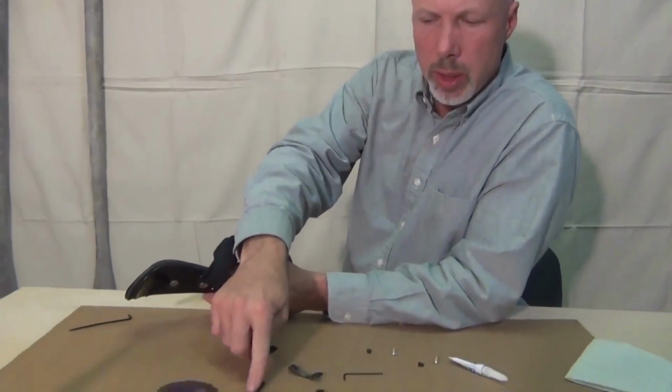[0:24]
On week 12, we talked about the calf section and how sometimes you have to make an angular adjustment. In that week, we talked about the reasons for the need to make that adjustment, but we really didn't talk about how to change out the longer tensor. We're going to replace the shorter tensor with the longer one because this patient has a problem where the calf section is dislocating medially, or on the inside of his leg. So by putting a longer tensor on the inside, we kick that calf section over a little bit to the lateral and realign that calf section to solve the problem.
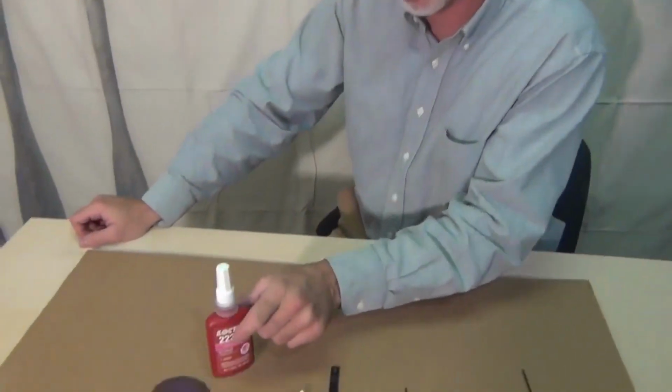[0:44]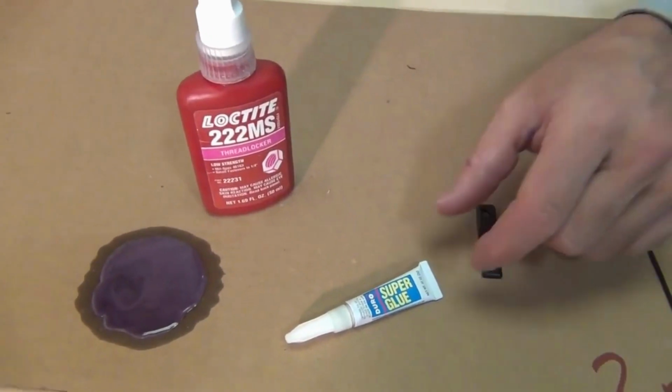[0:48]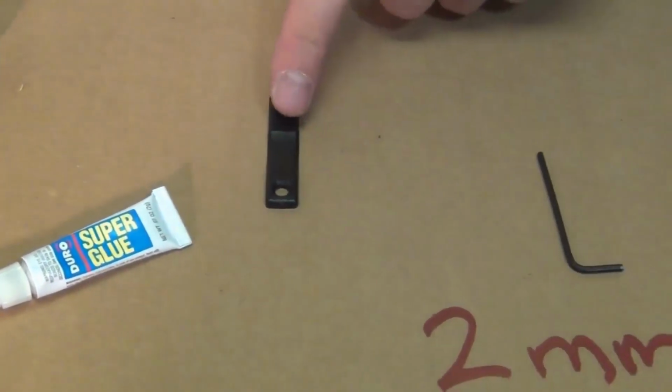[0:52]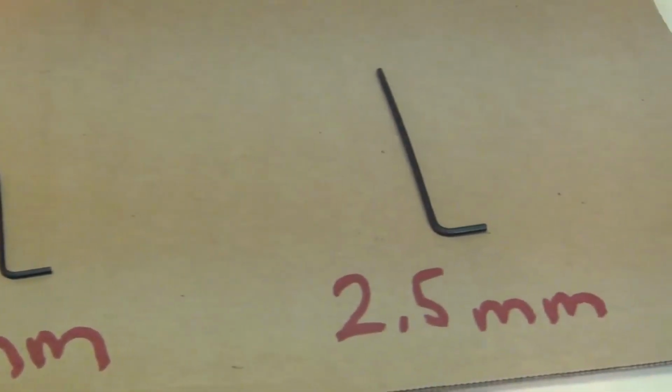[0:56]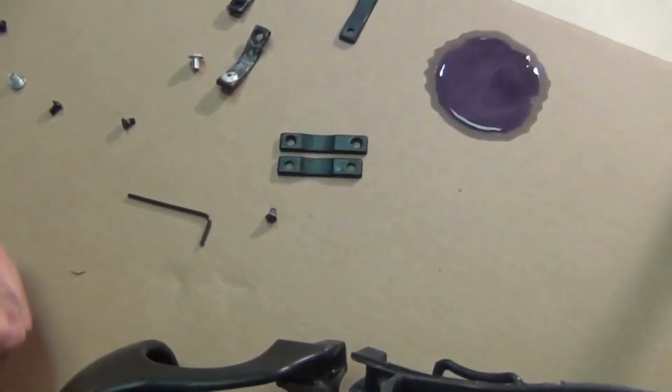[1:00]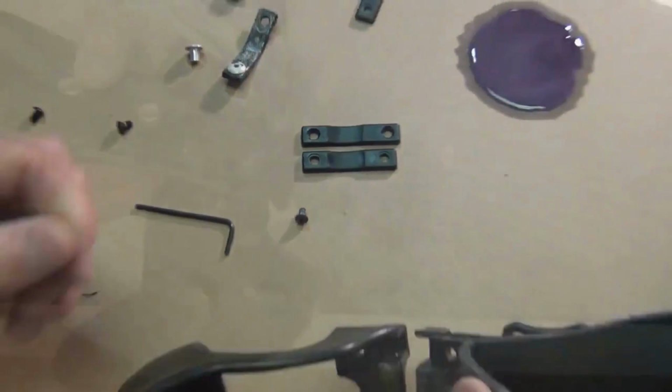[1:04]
What we'll need is some Loctite. We use purple, but blue is acceptable. Some super glue, any brand name will do. A longer tensor, a 2 millimeter Allen, and a 2.5 millimeter Allen wrench. As you can see, this is longer, but not by a lot, but enough to give us just the angular change we need.
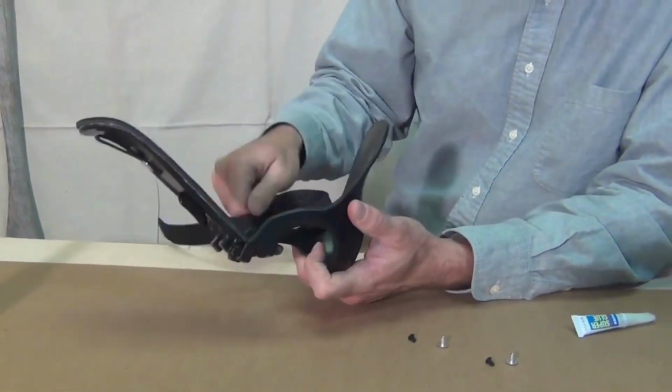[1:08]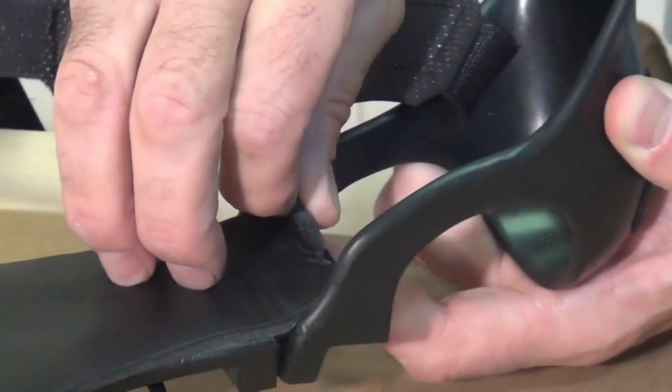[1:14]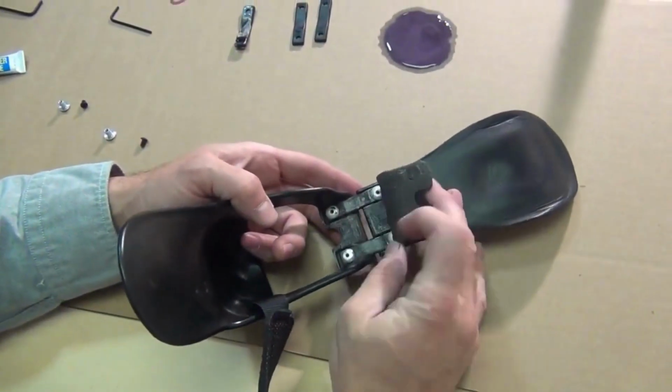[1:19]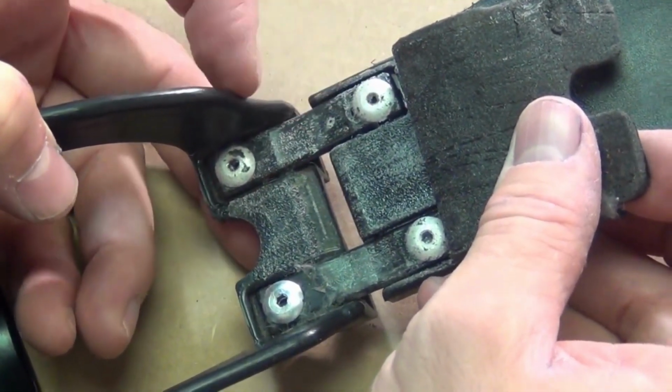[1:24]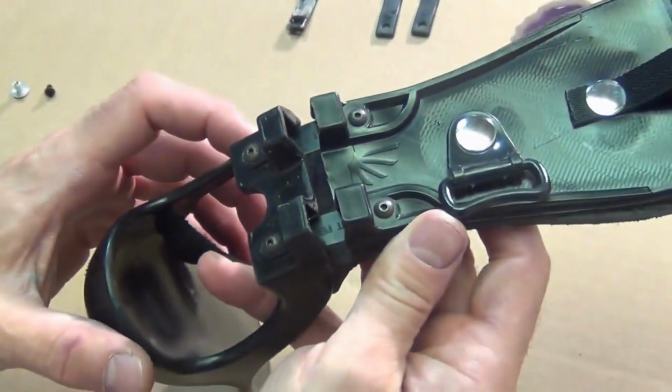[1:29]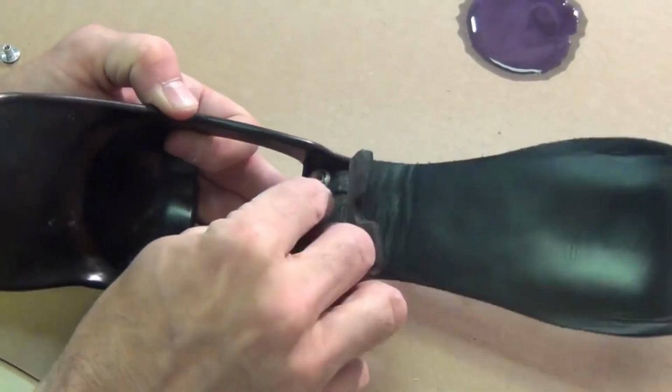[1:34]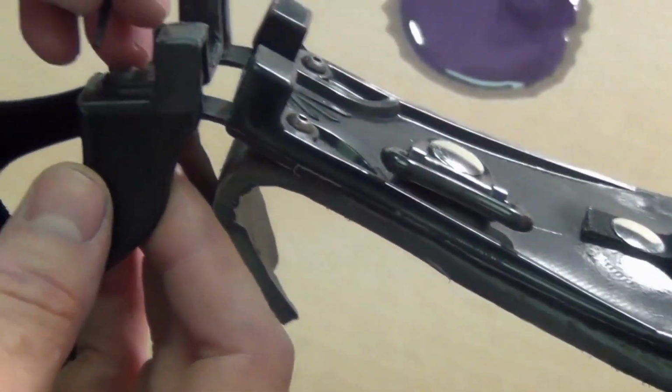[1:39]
First, get this eye strap out of the way. Now this is glued in place, but it can be peeled up relatively easily. Okay, so you can see that under this pad, we have the two shorter tensors, and then we have these back nuts, and then on this side we have the screws. So we need to take this 2.5 millimeter wrench and secure that back nut, because if we don't, there's a chance when we unscrew this, it'll spin uncontrollably and you won't get it apart.
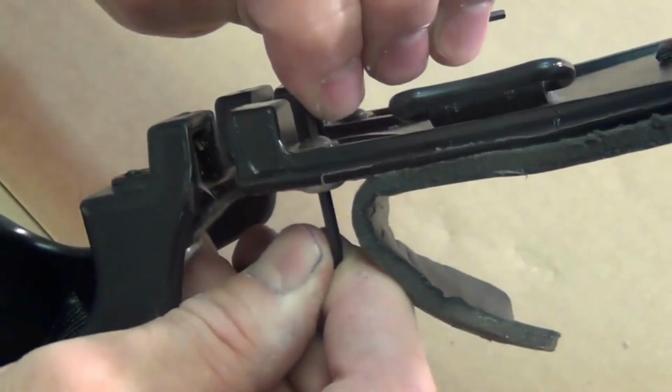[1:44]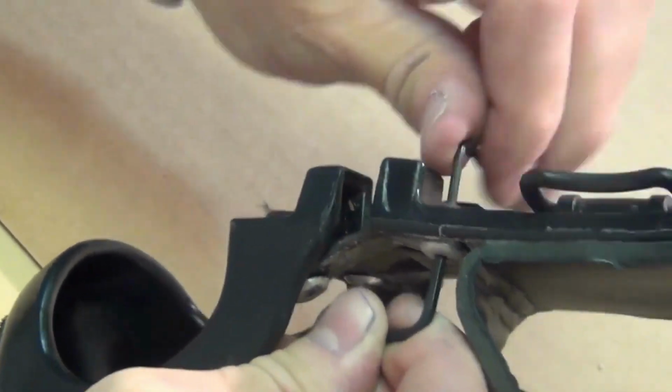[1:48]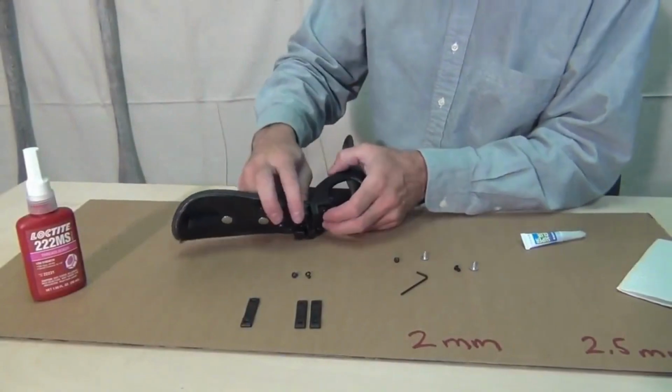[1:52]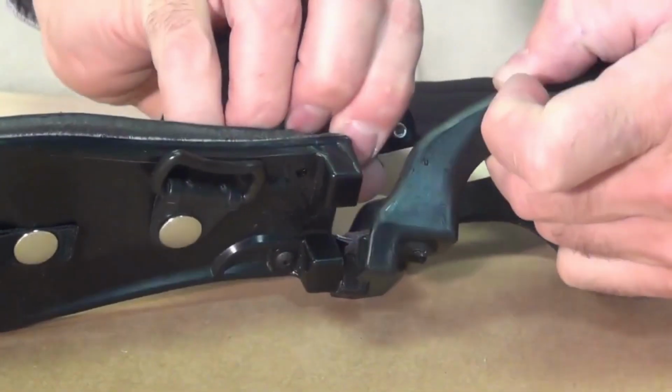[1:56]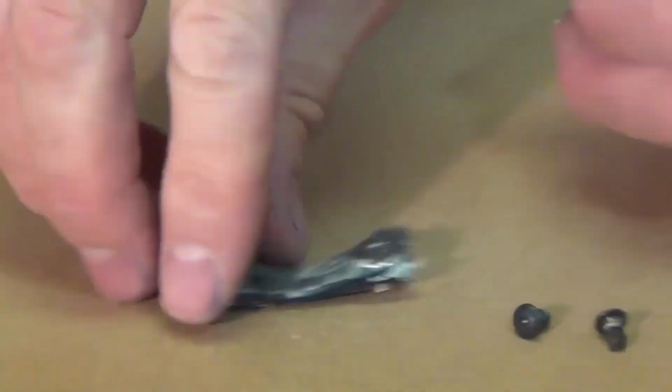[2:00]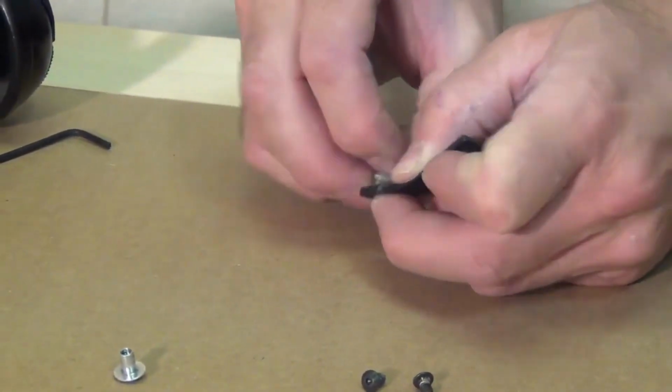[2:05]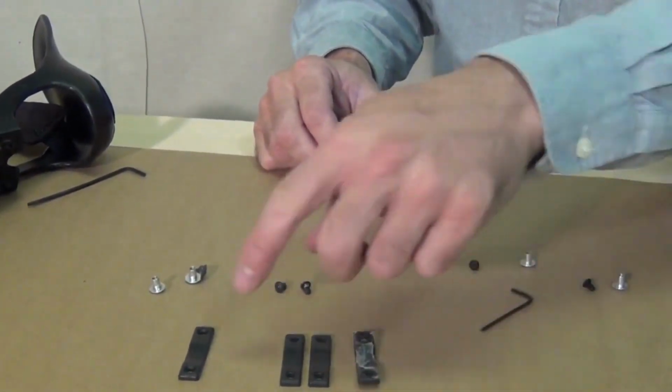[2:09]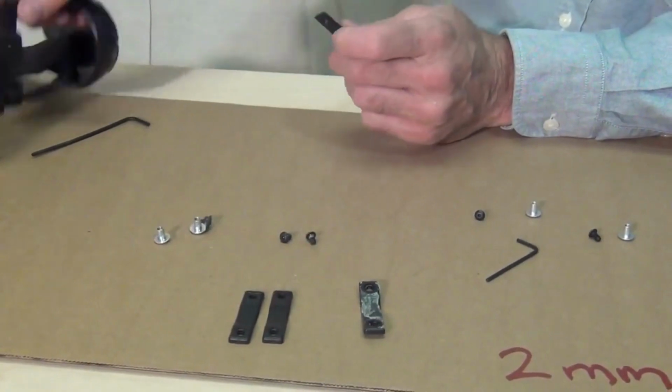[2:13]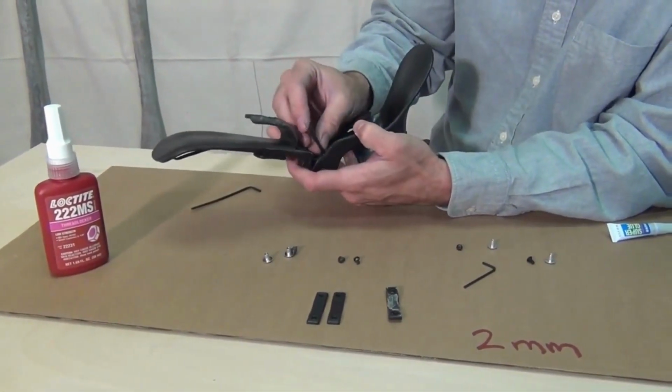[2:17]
All right, so now we've got to pop out that shorter tensor. The shorter tensor has the two end pieces, these little bolt-like things, and this is the shorter one, so we're going to replace it with the longer one. Two shorter ones are automatically installed with the Step-Smart brace. The longer one comes in your bumper kit.
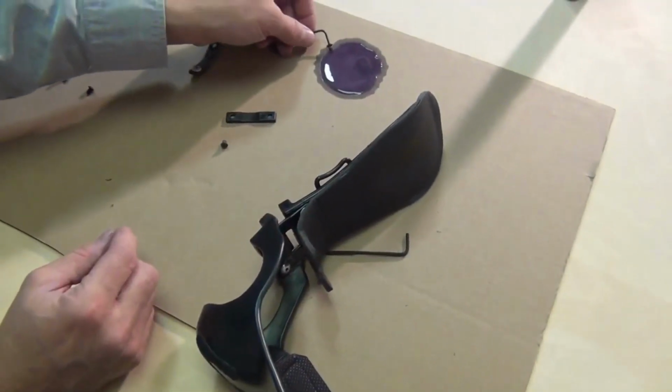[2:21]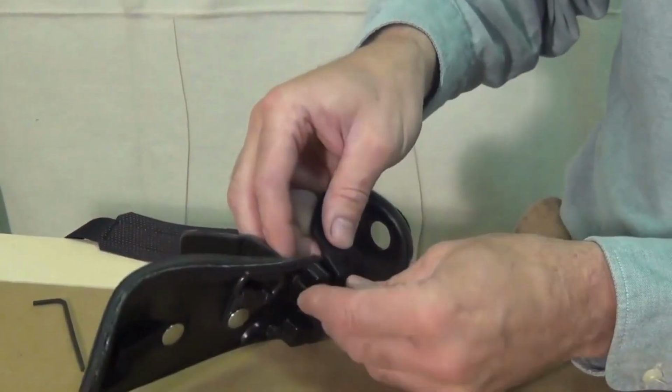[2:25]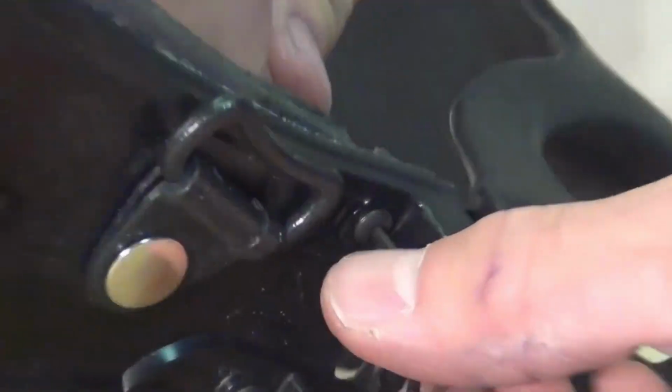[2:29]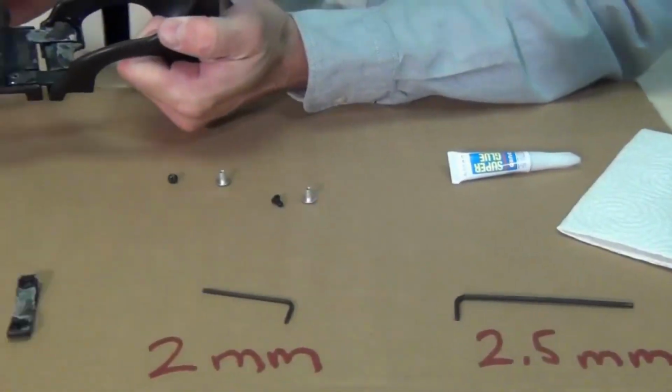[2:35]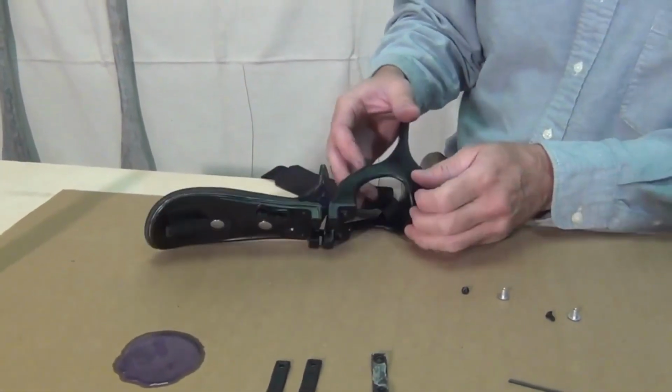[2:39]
And the screw just needs a little bit of Loctite, hardly any at all. And if I don't secure this back nut, that'll just spin, I won't be able to get it tight. It doesn't have to be super tight. Now we're left with this problem here, so we just want to stick that back down.
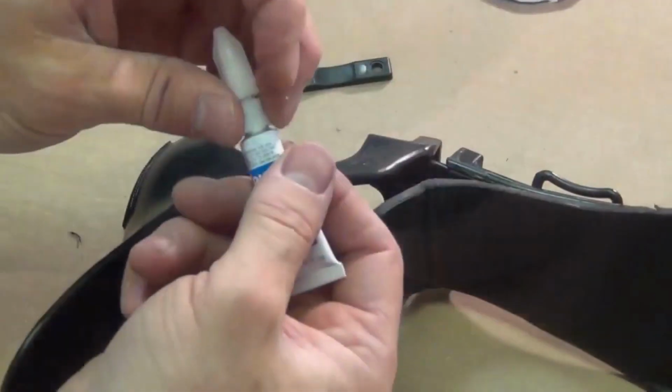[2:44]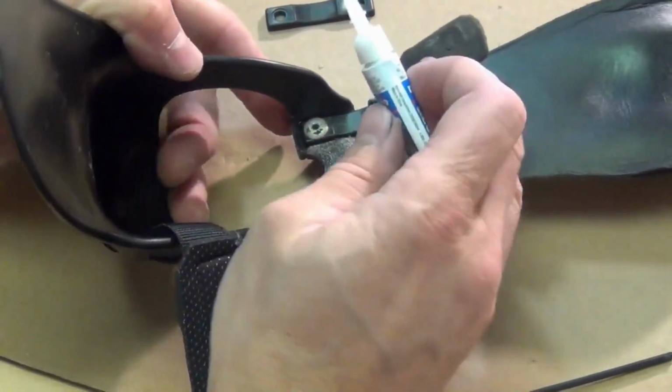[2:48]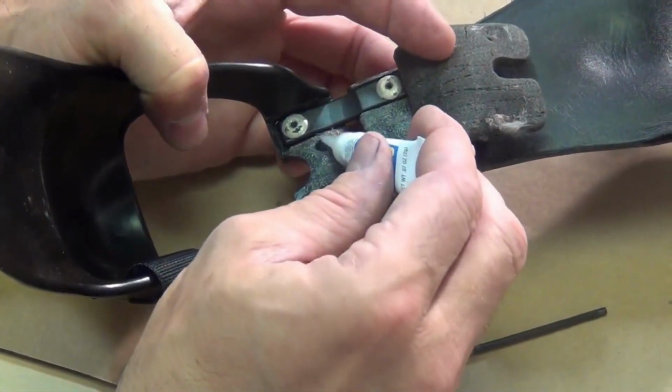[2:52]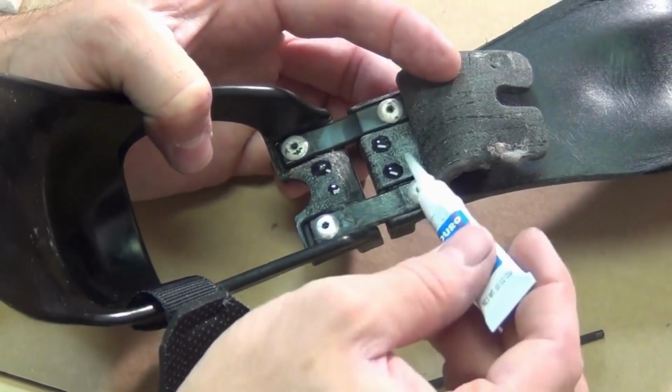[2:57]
At the hardware store, I got the super glue. And you don't want to put super glue all over the place. You don't need much. Maybe a spot here, here, here, here. I wouldn't put it anywhere in or around these screws. So just press that down with a little bit of pressure.
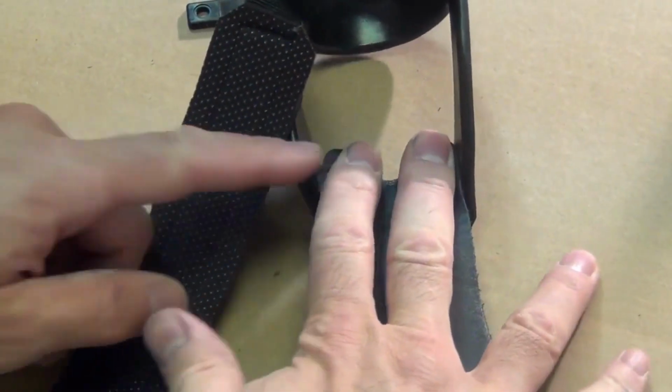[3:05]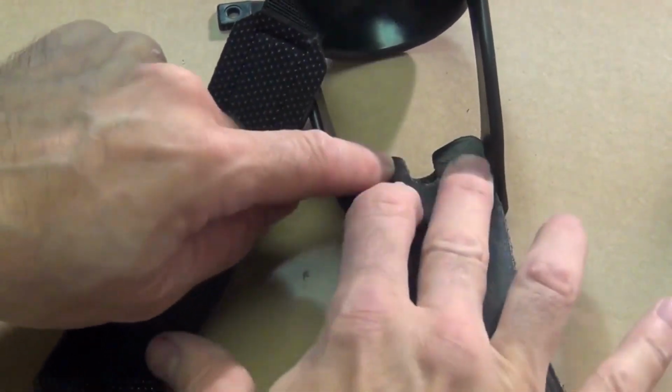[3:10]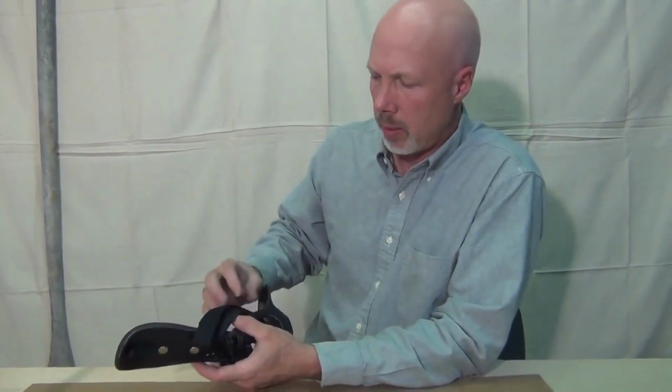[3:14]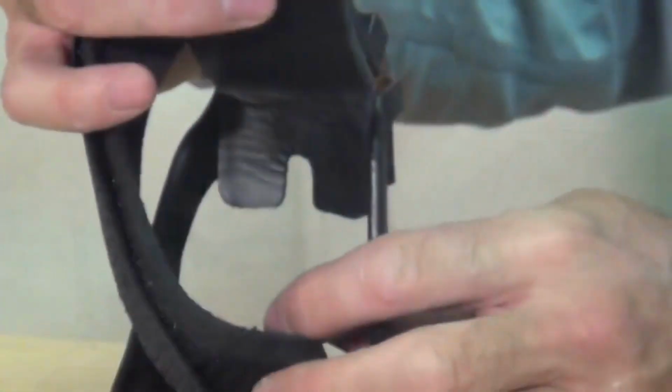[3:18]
So it looks like we've finished the job. Got the eye strap there. Could reinstall our bumpers. There you have it.